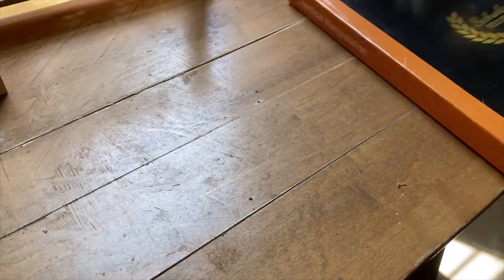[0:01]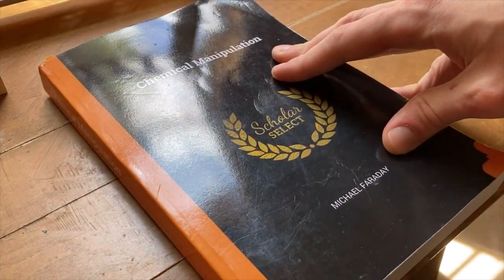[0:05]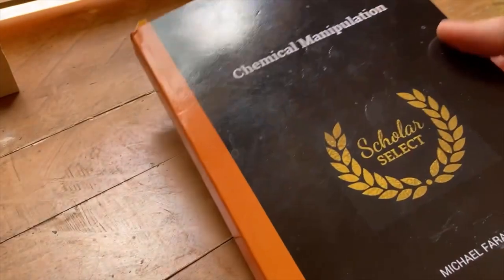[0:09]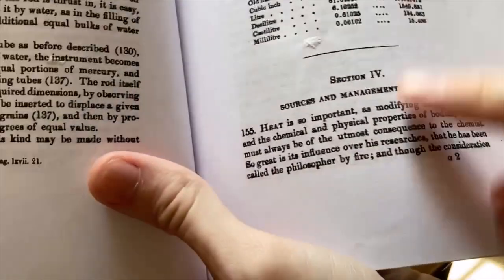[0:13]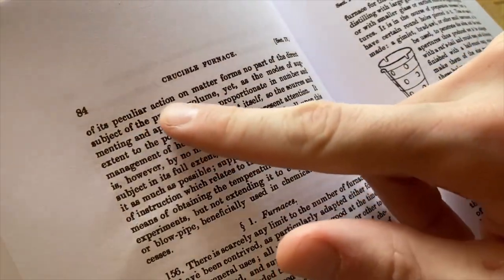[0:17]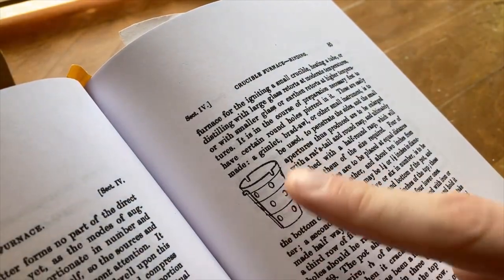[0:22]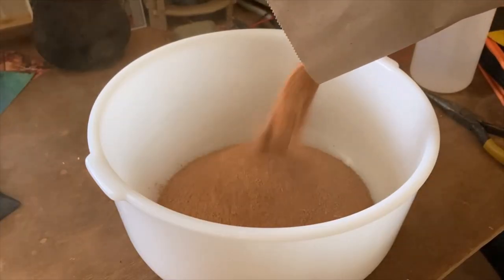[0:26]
This is Chemical Manipulation, a fantastic book written by the one and only Michael Faraday. The book details the lab techniques used by chemists like Faraday at the Royal Institute of London during the early 1800s. In section IV, under entry 157, Faraday describes something he calls a crucible furnace, which he claims to use for everything from simple distillations and heating flasks to melting iron as a desktop blast furnace.
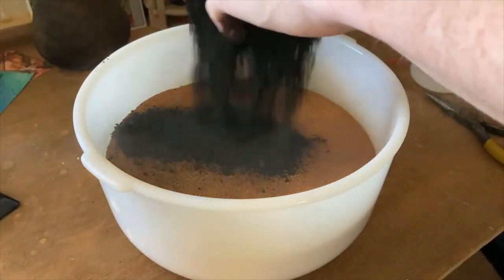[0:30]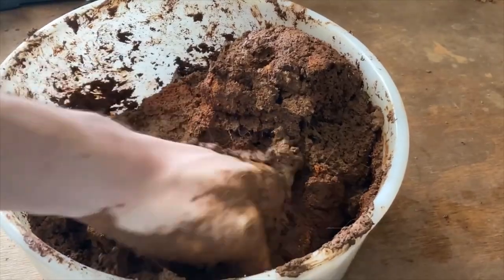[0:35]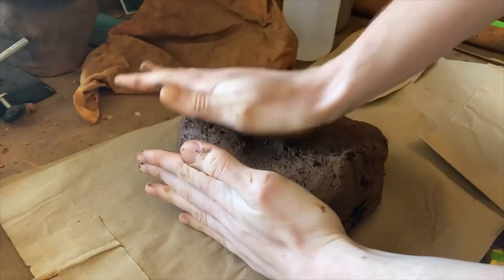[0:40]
I want to reproduce one of these furnaces and try to learn to use it. If it is even a fraction as versatile as Faraday suggests, I think I'll have quite a few uses for it, as well as it being potentially interesting insight into chemistry during the heart of the scientific revolution.
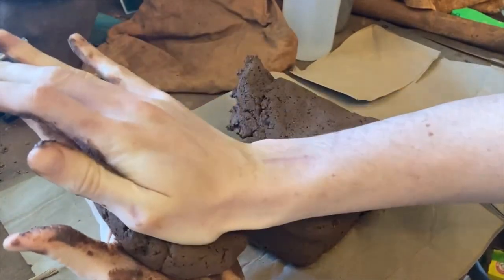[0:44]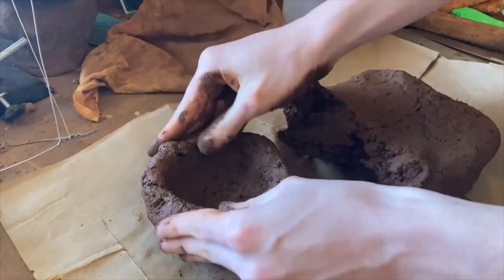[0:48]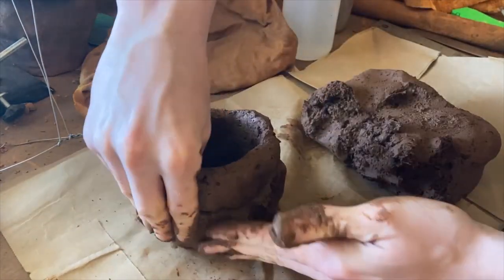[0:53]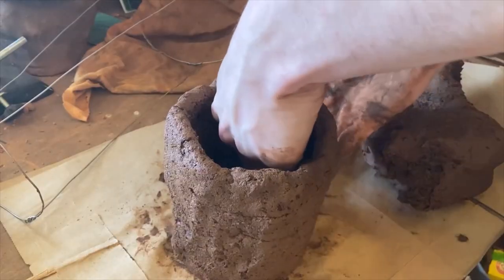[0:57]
Faraday says an aspiring chemist could purchase all the parts of his furnace from vendors, needing only minor modifications to be used as a furnace. But 200 years later, those vendors no longer exist, so I'm going to have to make it entirely from scratch. And because this is a ScrapCraft project, I'm only going to use natural and scrap materials to do so.
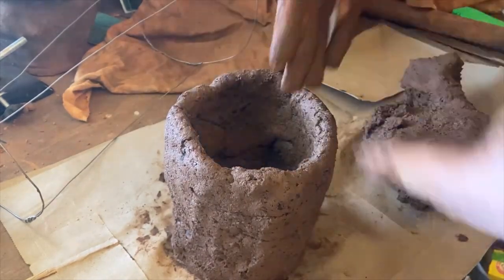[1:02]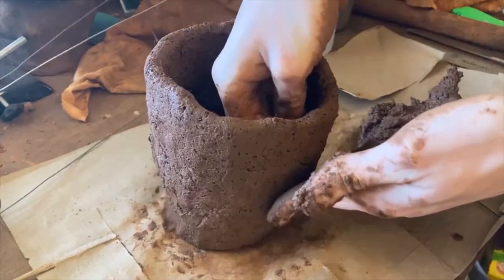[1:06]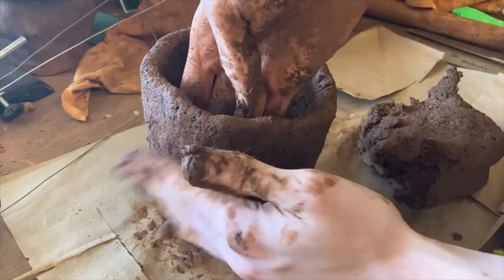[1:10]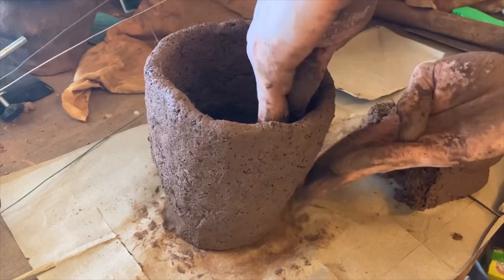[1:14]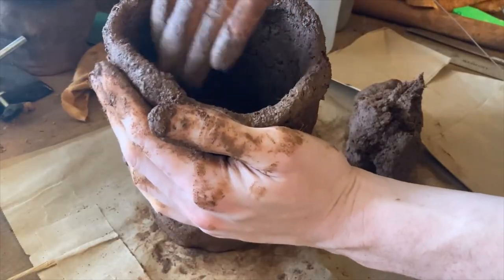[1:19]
In the book, Faraday writes that his crucible furnace is based on a clay pot made from plumbum-infused clay. To those who know Latin, you may think this plumbum refers to lead, but actually it's a reference to graphite. This means the clay will have a high elemental carbon content. I don't have loads of graphite on hand, so I'm going to use charcoal dust with the alchemist's clay recipe I showed in another video.
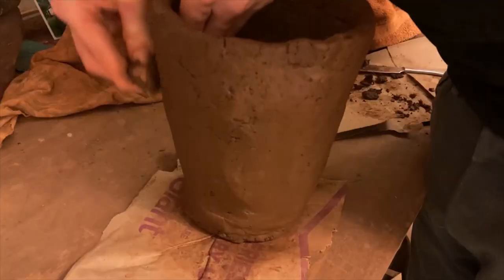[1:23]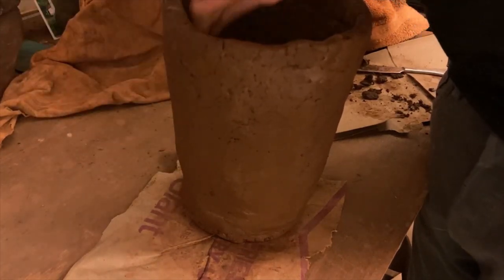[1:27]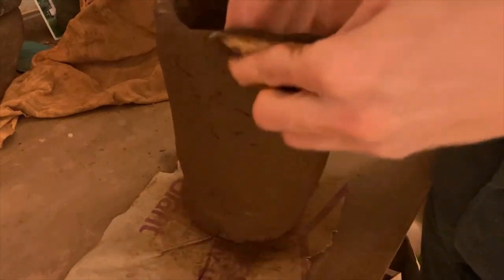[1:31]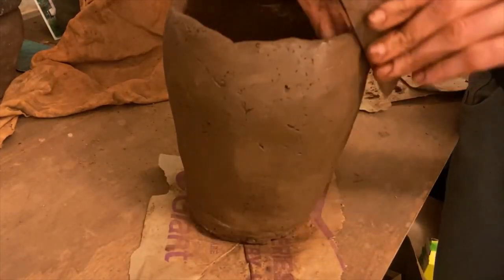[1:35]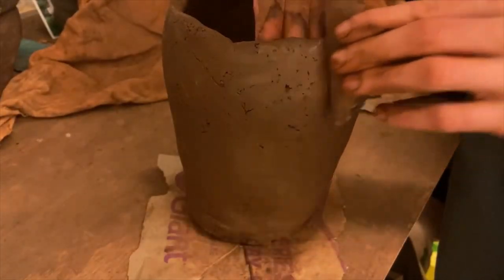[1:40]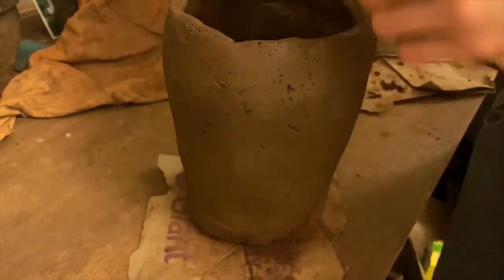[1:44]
Obviously, charcoal and graphite have very different properties, and I would not be surprised in the slightest if Faraday's furnace could withstand many more thermal cycles than mine will. But being that my clay recipe comes from the great Islamic Golden Age alchemist Al-Razi, and was used for his furnaces over 1,000 years ago, I'm certain it will at least work to some degree, and will make this project a little bit of a mashup of historical chemistry technology.
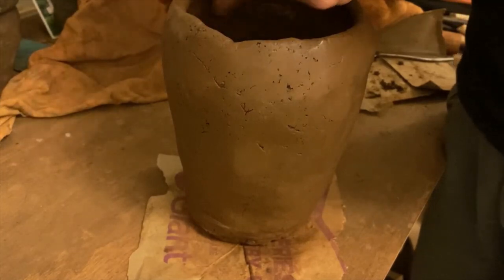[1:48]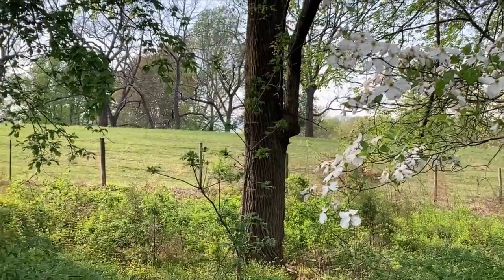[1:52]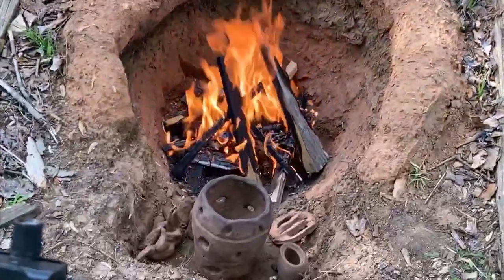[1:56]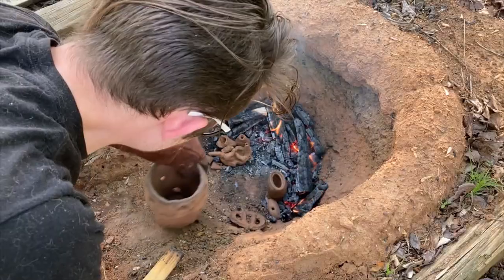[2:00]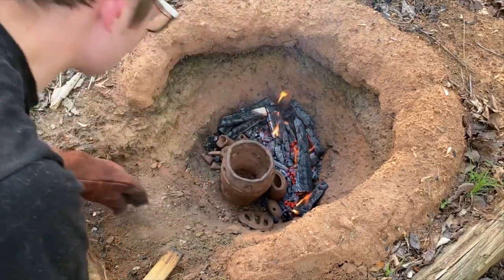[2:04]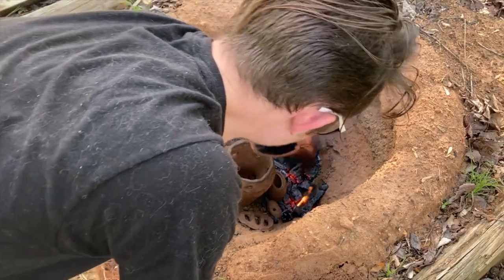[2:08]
After building up the pot, I drilled some holes and carved grooves to Faraday's exact specifications. Then I finally fired it. Faraday does not tell me if his pots were fired in oxidation or reduction, so I chose the simplest option: to fire in an open oxidizing pit, similar to my ancient forge project, making this furnace terracotta. So yet again, I'm dancing around the historical technology timeline, now back tens of thousands of years.
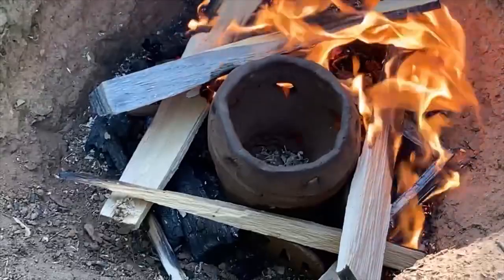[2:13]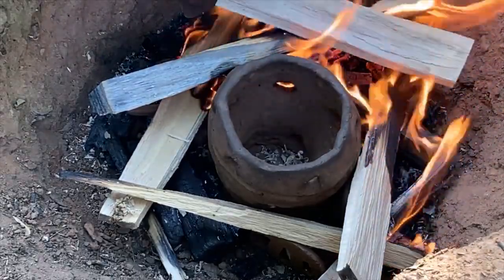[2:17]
While I fired the pot, I also fired some other things, including a small grill, which will sit just beneath the second row of holes in the furnace to hold the fuel off the ground.
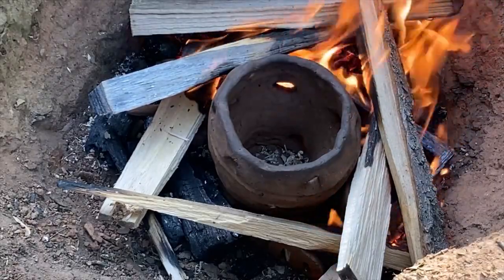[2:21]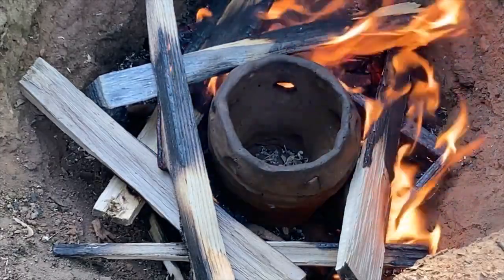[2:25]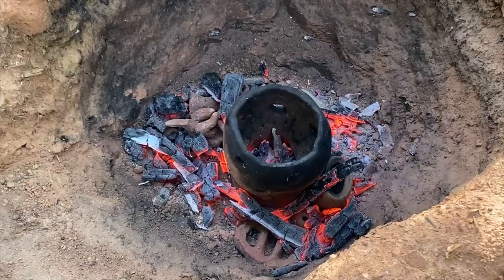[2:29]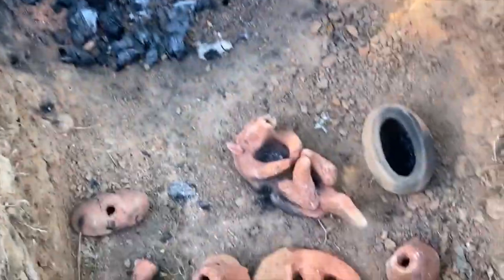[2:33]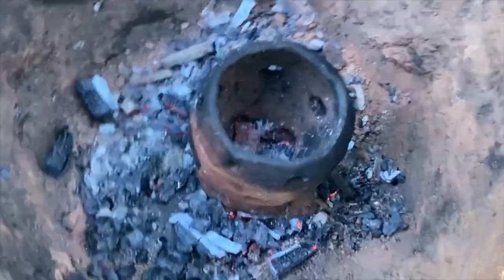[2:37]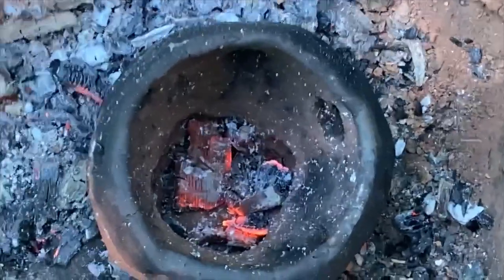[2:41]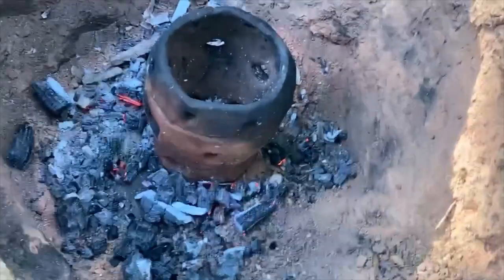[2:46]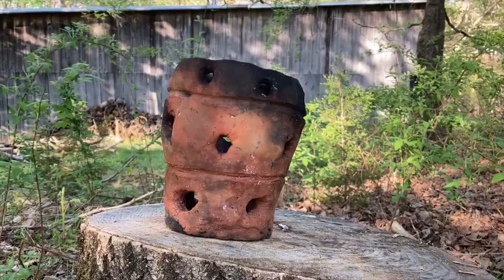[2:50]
So as you can see, the fire's out, and I'm pulling the things I've fired out of the fire. But what's interesting is the pot still has red coals in it. There's still actively glowing red in there. I think that's the aspiration of the furnace design already at work.
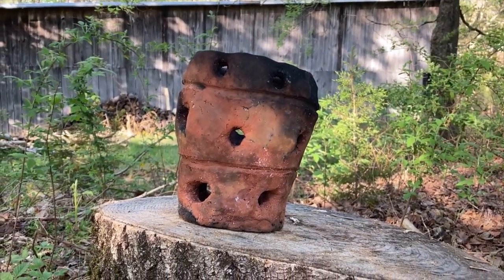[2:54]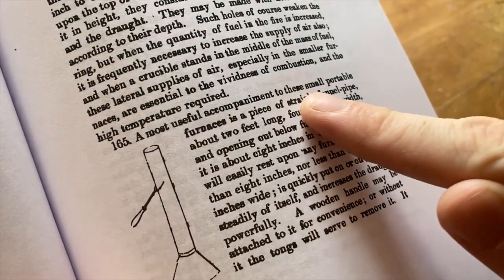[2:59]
While the pot is the main component of the furnace, Faraday insists on using a removable metal chimney, only about 2 feet long, and claims the combination of the furnace and smokestack will get iron white hot with very little effort from the user.
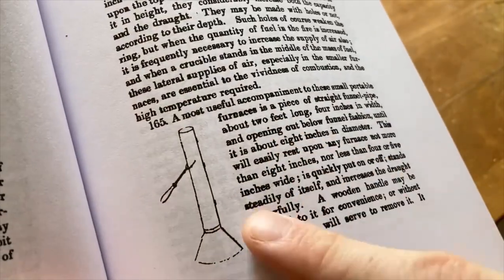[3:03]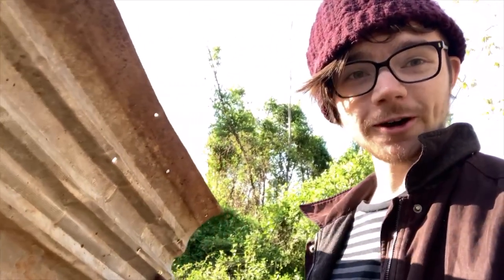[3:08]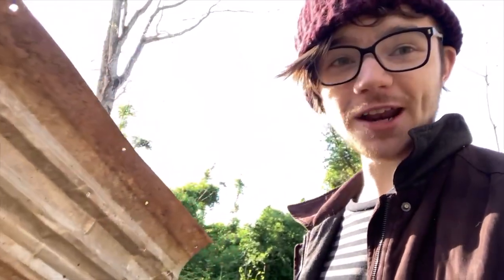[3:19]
This is old corrugated sheet metal. It's used for roofing, specifically things like chicken coops, doghouses, cattle feeders, that sort of thing. Whatever this thing was used to roof has long since rotted away, and I found this piece in the woods on top of a pile of rotten wood sort of deep in the dirt. So, I think it will work to make my chimney out of. It's riddled with holes, so it might take a little finessing, but I think it will work.
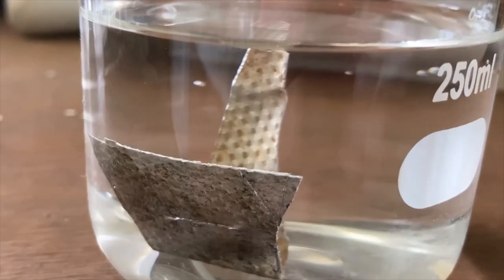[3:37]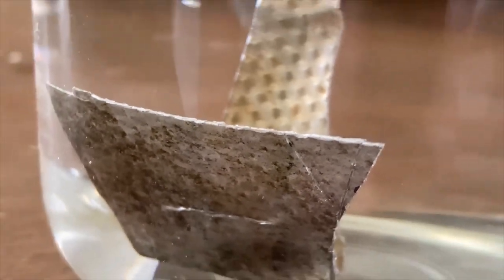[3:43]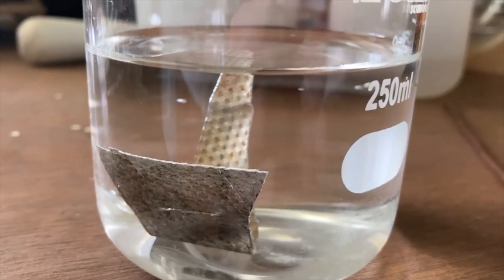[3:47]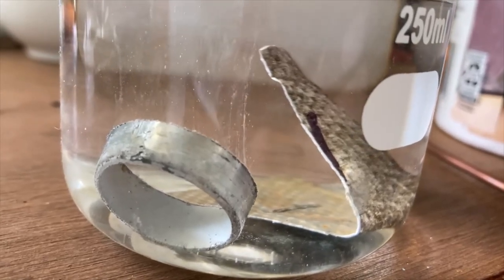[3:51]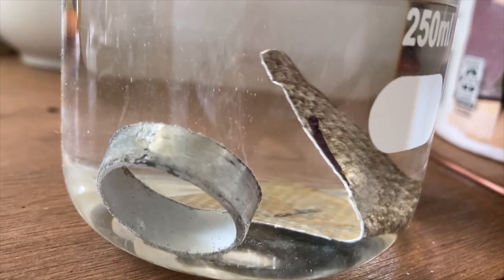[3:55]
First, I need to identify what type of metal my scrap is. To check for zinc or zinc galvanization, I submerged a piece of the metal in vinegar. Nothing happened. For comparison, I dropped in a galvanized steel pipe, and as you can see, it bubbles profusely as it generates hydrogen gas. As I was doing this, it occurred to me it was obvious what the metal was, and I'm sure at least a few of you have guessed by now.
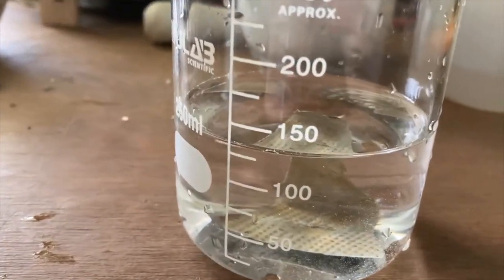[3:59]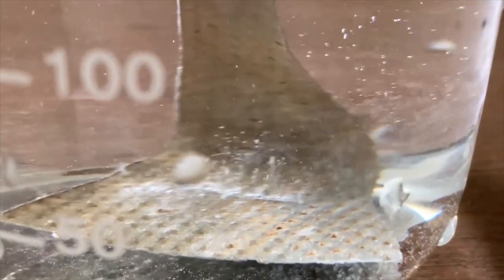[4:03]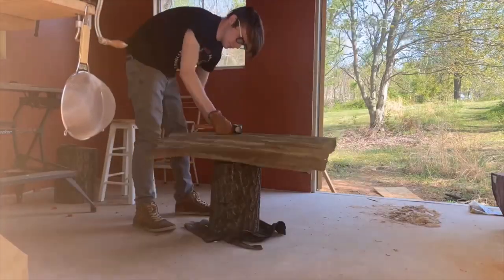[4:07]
So to confirm, I prepared another solution, this time of dilute sodium hydroxide, and dropped in the scrap. It immediately began to bubble, confirming that it is in fact aluminum metal.
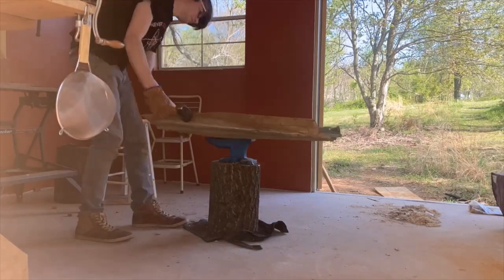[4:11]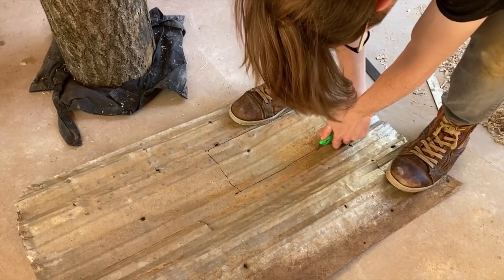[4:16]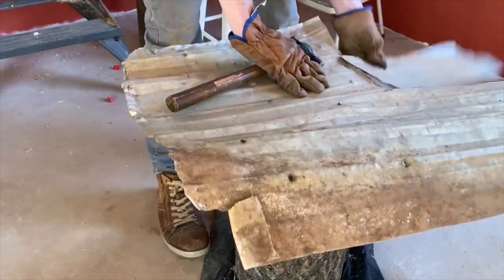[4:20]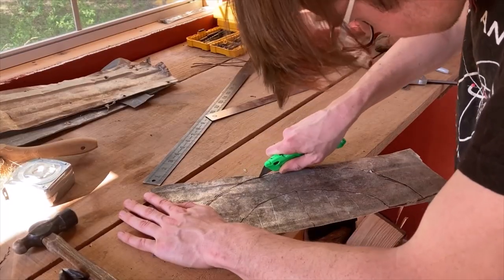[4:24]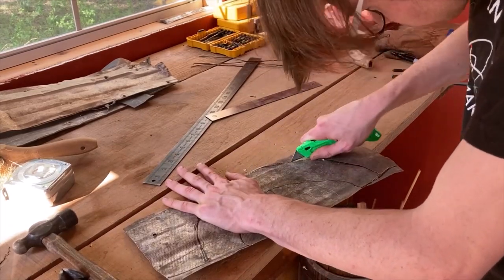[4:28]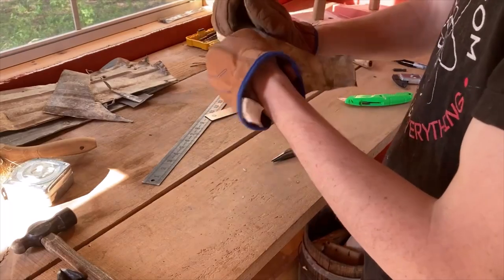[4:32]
Aluminum may not be perfect for this application due to its very low melting point, but I continued to work it anyways. It is very reflective in IR, which means it should resist being heated radiatively, and its high thermal conductivity should spread the heat that does reach it around evenly. Its melting point would be a problem if it weren't for my intention to only use the chimney intermittently, as running the furnace continuously with the chimney would be wildly inefficient.
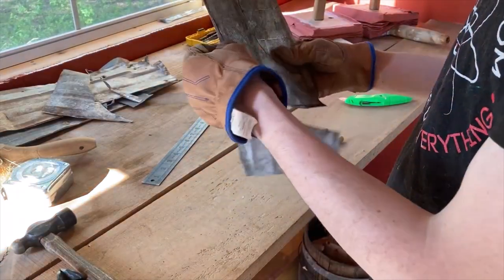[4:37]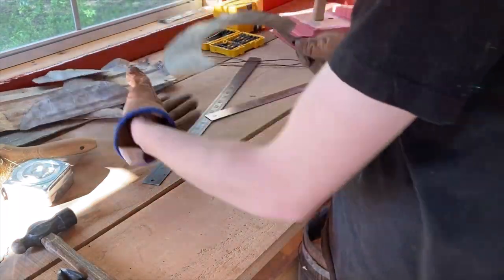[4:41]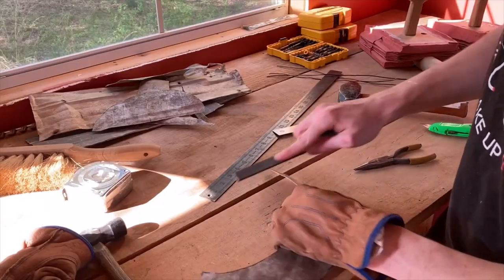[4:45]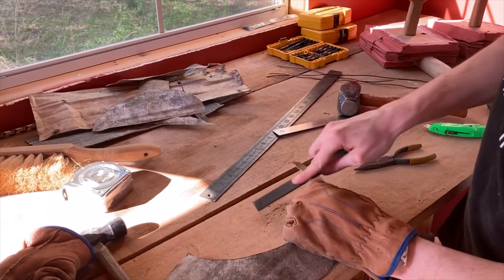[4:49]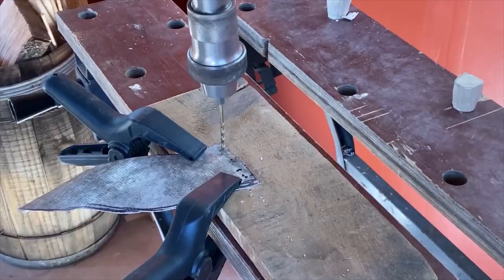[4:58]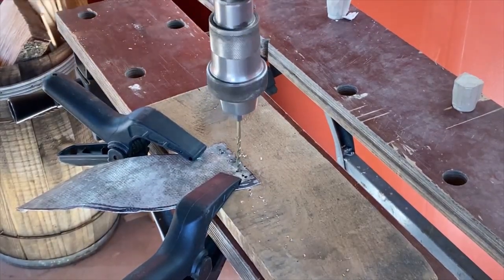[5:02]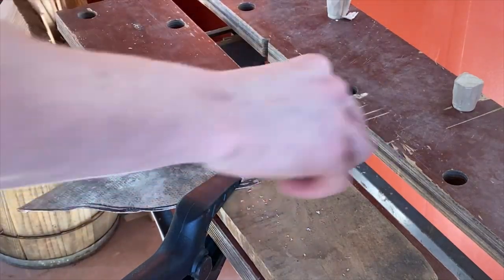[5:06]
A lot of people may think a chimney's role is just to give a place for the exhaust gases to go, but in reality, they have a large impact on how a fire burns. The chimney creates a column of hot air. As the hot air moves up the column, it creates a displacement, a little like raising the plunger in a doctor's syringe. This displacement sucks more air into the furnace, which invigorates the flame. The taller the chimney, the larger the displacement. This increased airflow increases the burn rate and raises the temperature of the fire higher than it would naturally be. In the case of charcoal, it can be a lot higher.
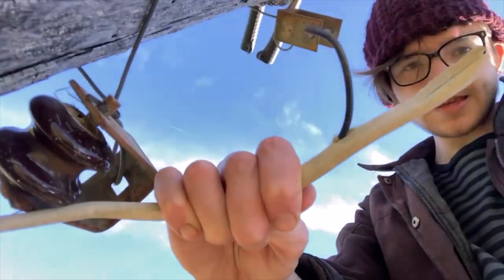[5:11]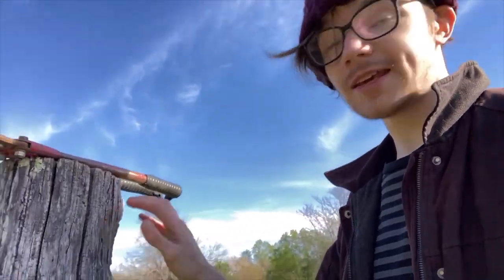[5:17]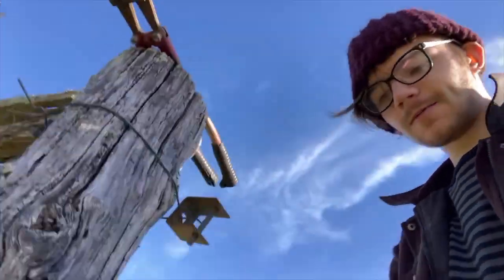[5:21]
This is an old fence, and this is electrical wire. It used to be an electric fence, which for the most part would be run through the fence itself. But here at the gate, it goes underground just for a few feet. And for those few feet, it's copper wire. So I'm going to use this copper to make my rivets for my chimney.
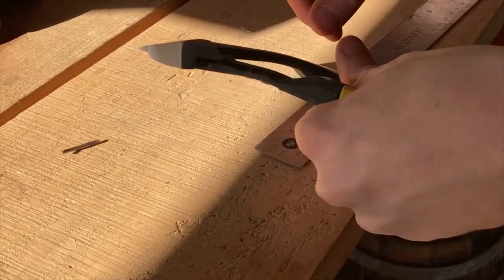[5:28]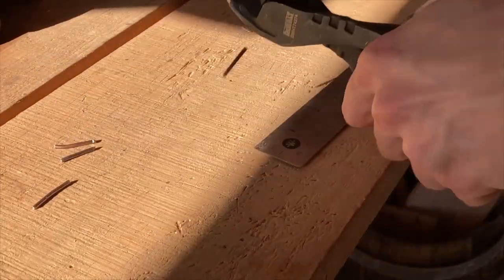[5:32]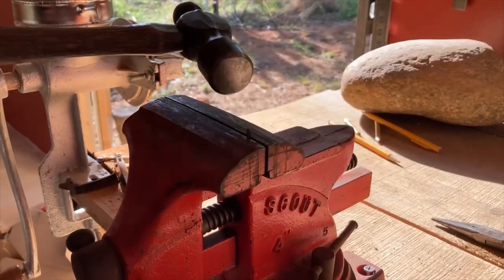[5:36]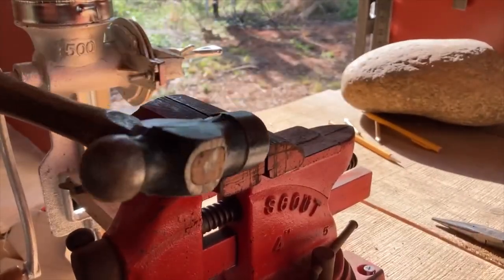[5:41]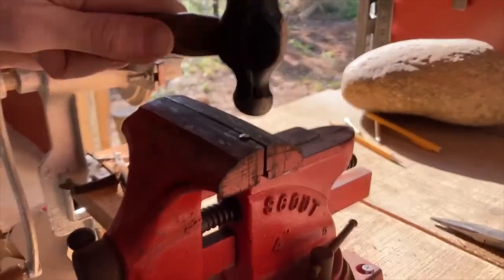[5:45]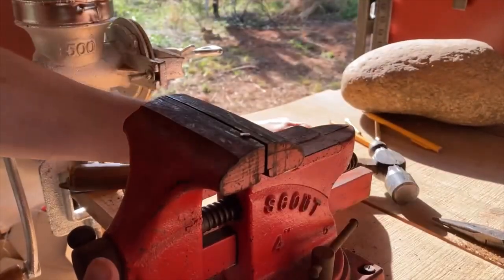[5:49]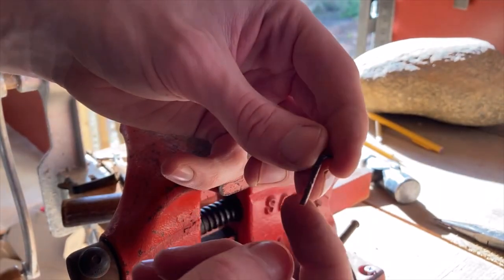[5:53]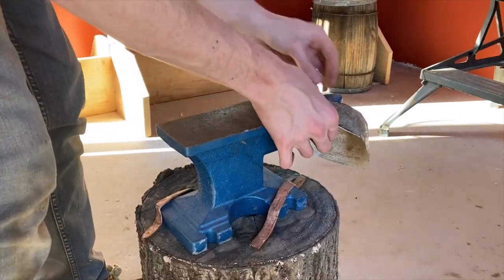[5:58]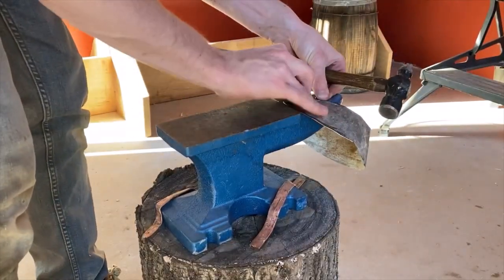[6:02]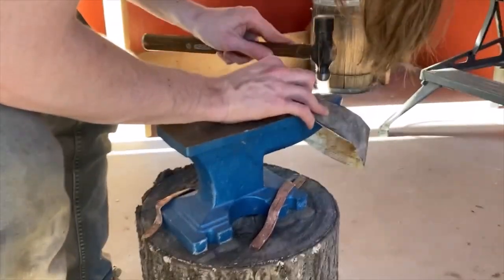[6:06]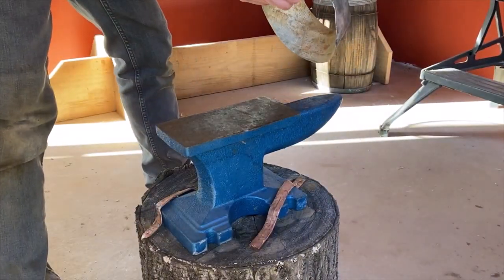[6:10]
The way a chimney increases the fire's temperature comes with a trade-off, as the same displacement that invigorates the flame and makes the furnace more effective has the consequence of carrying up to 70% of the heat energy generated into the air above the chimney, where it's effectively wasted. This is actually why, prior to the Industrial Revolution, houses commonly didn't have chimneys, as it was far more fuel efficient to cook your food on a chimneyless fire and just let the smoke percolate through your straw-thatched roof. The introduction of chimneys into cities that enabled denser living spaces ended up requiring people to use three times as much fuel to cook for the same amount of time as it did before the widespread use of the chimney.
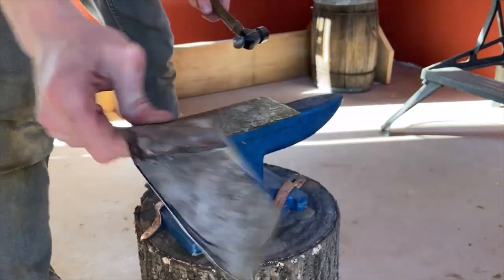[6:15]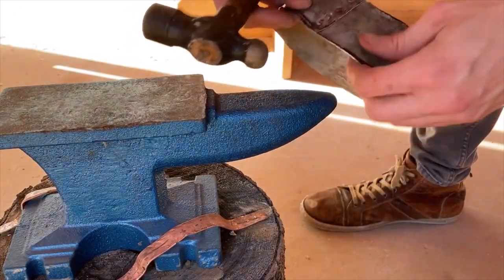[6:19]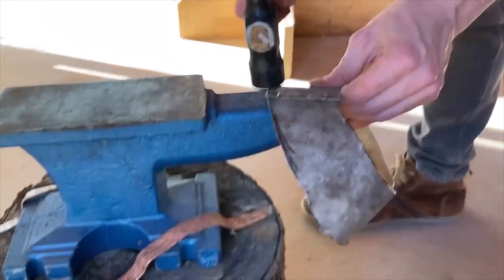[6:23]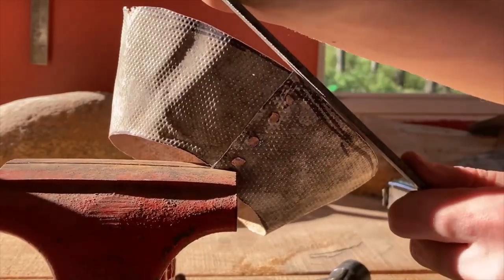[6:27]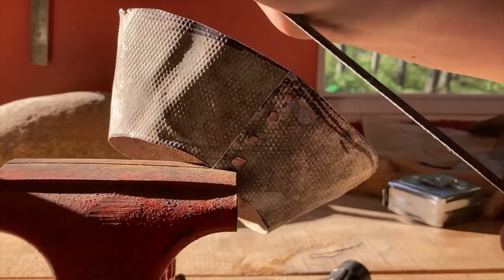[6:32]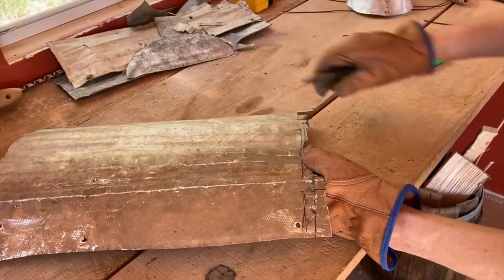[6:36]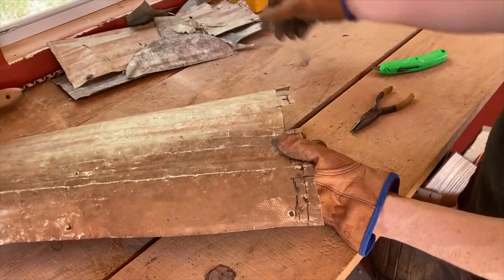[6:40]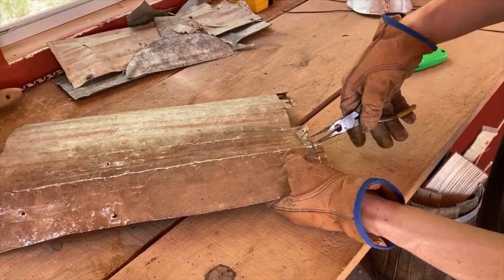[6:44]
The same problem existed in chemical furnaces as it did in kitchens. This furnace provides a nifty way around the problem by making the chimney removable. A low-temperature, efficient burn is as easily acquired as a high-temperature, inefficient burn. However, this means running the furnace is always going to be a balancing act of trading off energy quantity for temperature, and vice versa. Achieving the requisite temperature and energy quantity for a chemical reaction as quickly and efficiently as possible will take a lot of practice.
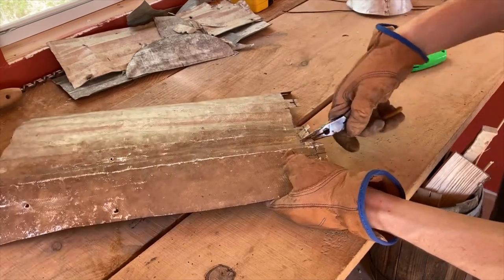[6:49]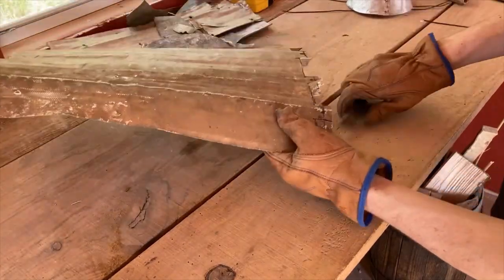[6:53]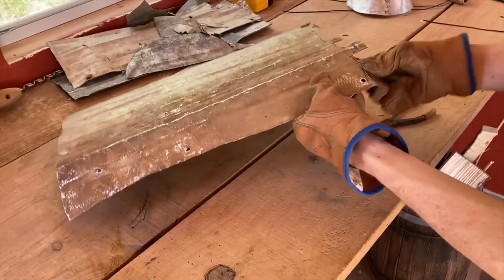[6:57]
I will likely use the chimney to start the furnace, but shift over to using a bellows or something similar for the majority of the firing. Faraday suggests doing exactly this, mentioning the fuel efficiency as his reasoning. This makes the fact that the chimney is removable very convenient.
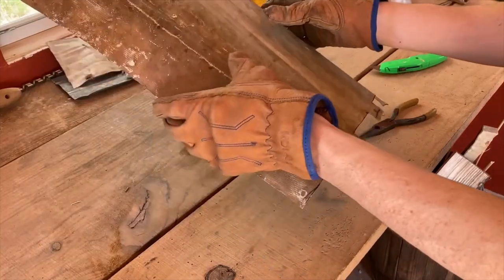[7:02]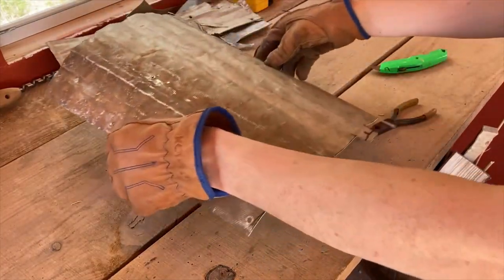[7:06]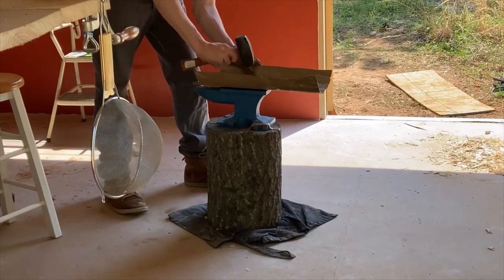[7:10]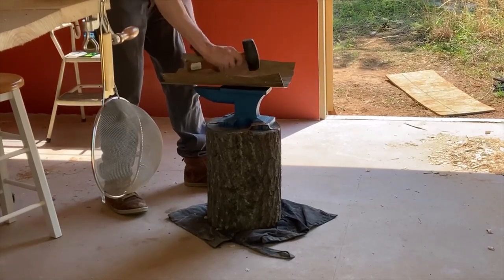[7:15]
The sheet metal design of this chimney is quintessential to Faraday's time. Only a few years earlier in the historical timeline, and sheet metal products would have been very, very expensive. But with the rise of industrial manufacturing, things like lightweight chimney pipes became widespread.
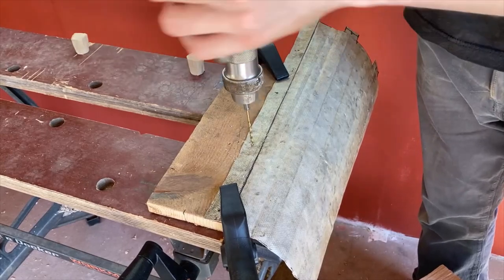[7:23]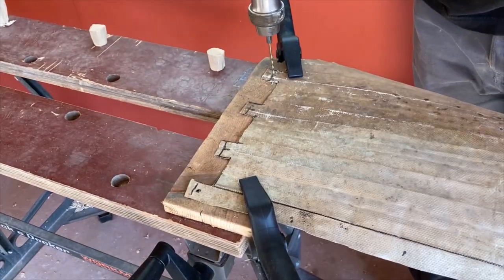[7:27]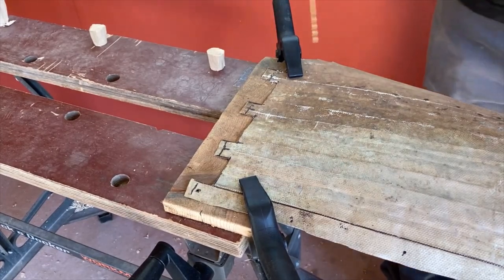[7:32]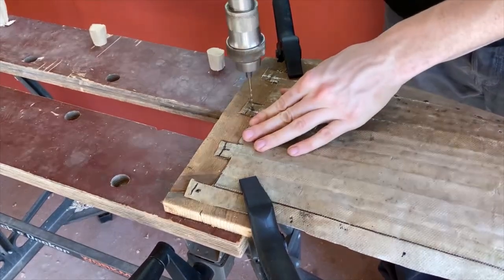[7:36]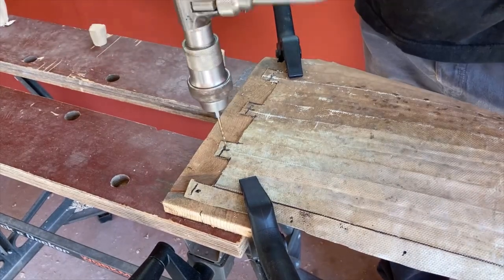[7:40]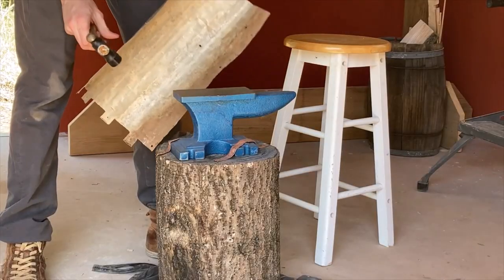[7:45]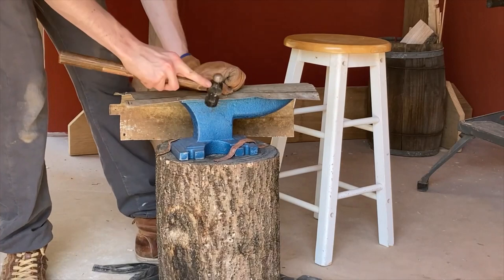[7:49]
I think the fact that half the furnace is pottery, an old art so attached to the traditional ways of life, whereas the other half is sheet metal, an icon of the industrial world, will make this furnace seem strange on an aesthetic level. It's the meeting point between two disparate worlds, and it's especially strange to see the pieces of it out of place and in our own world, where the sheet metal that once would have been prohibitively expensive to even look at is now littering forests as abandoned remains of the incredible growth that came before.
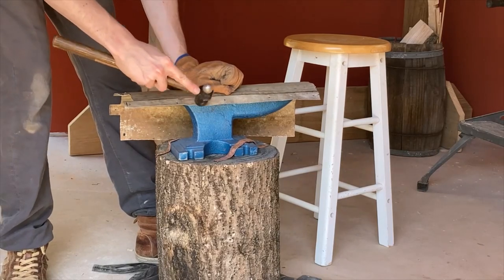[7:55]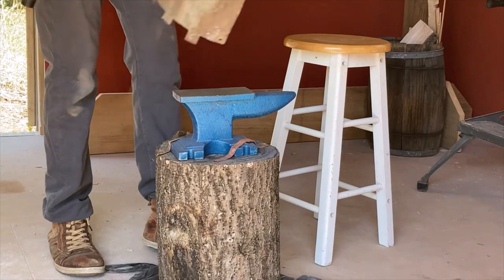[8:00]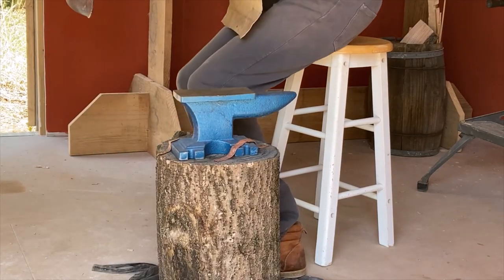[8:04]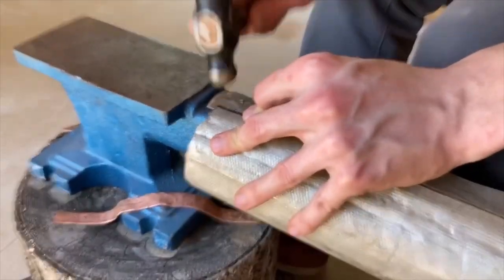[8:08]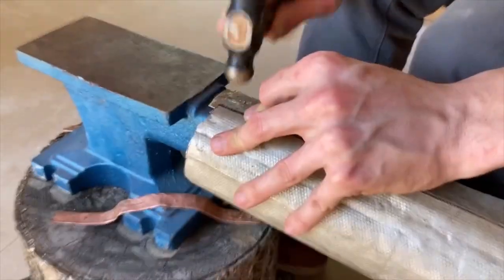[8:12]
My favorite part of historical design is almost always the beautiful and elegant simplicity of the solutions they provide. However, this simplicity is almost always matched by a demand for skill on the part of the user. I have no idea if my first attempts at reactions in this furnace will be successful at all. I've never used a furnace like this, and I'm still very much a novice to the art of manipulating fire in general.
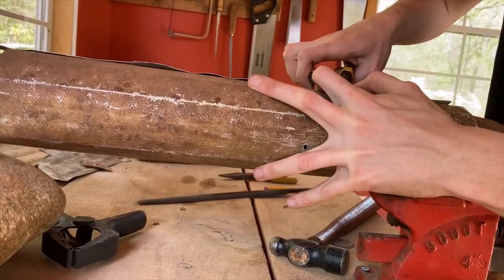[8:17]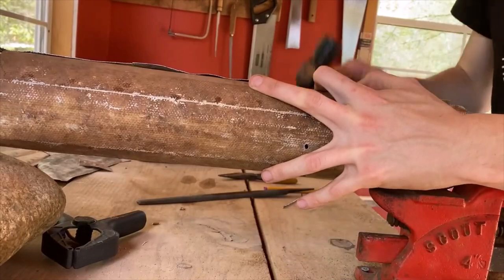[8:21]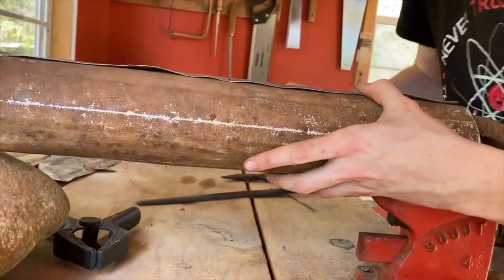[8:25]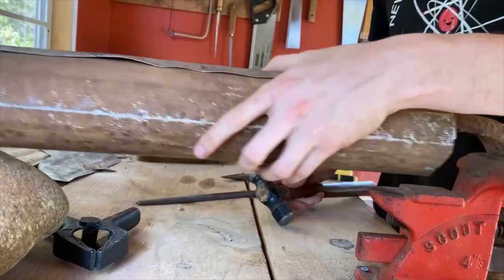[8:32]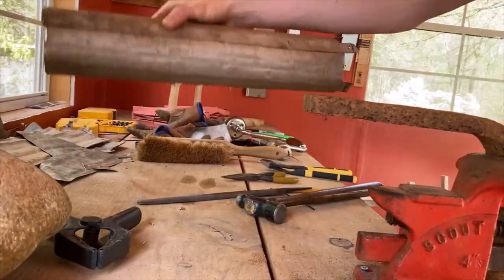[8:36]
In Faraday's time, chemists would have been very adept at the use of fire, and were even called the philosophers by fire. In old chemical and even alchemical texts, the word fire is almost used as a placeholder for the word truth. If something is proven true, it is said to have been confirmed in fire. If a hypothesis is proven wrong, it has been rejected by the fire.
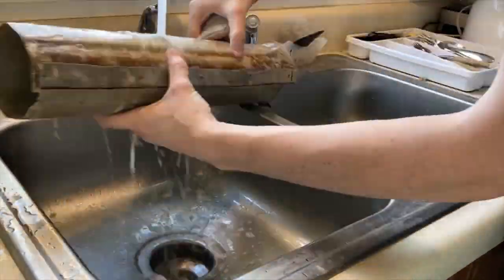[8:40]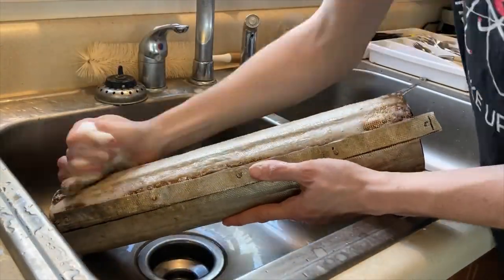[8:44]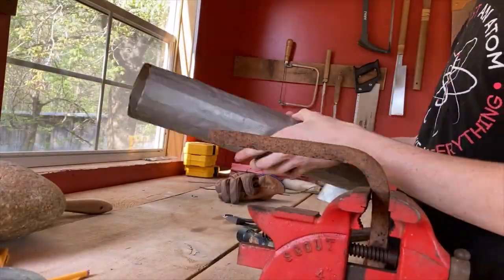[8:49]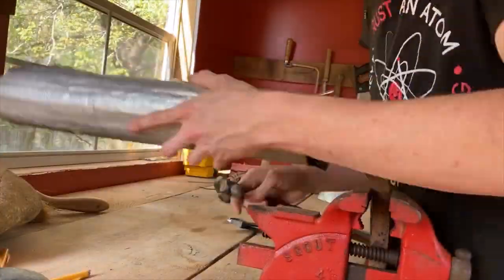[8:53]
Centuries before Faraday's time, these words would be scrawled in Latin along the margins of notebooks, alongside the hypothetical formulas they pertain to. These days, it's rare to even just see the use of a Bunsen burner in a lab, largely due to the many contributions Faraday himself made in the field of electricity.
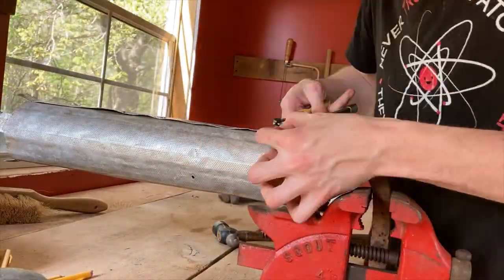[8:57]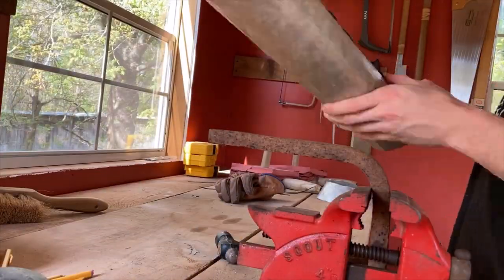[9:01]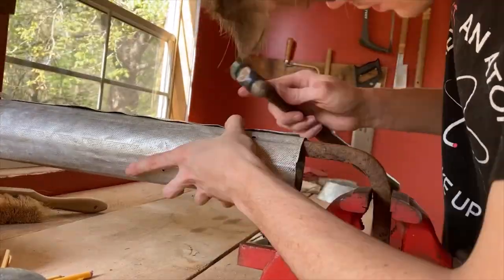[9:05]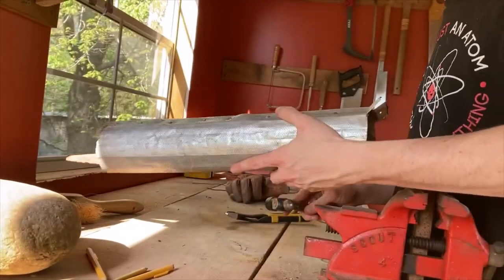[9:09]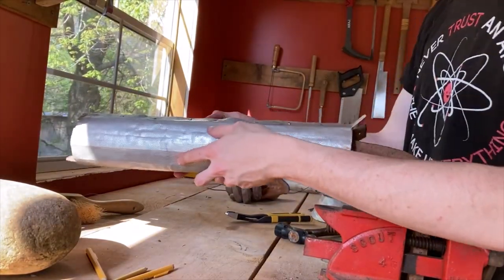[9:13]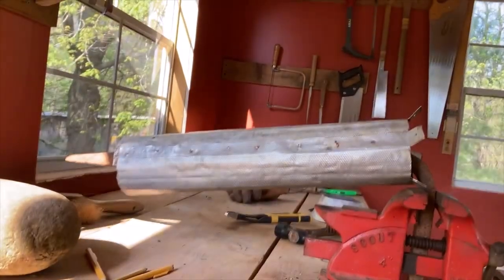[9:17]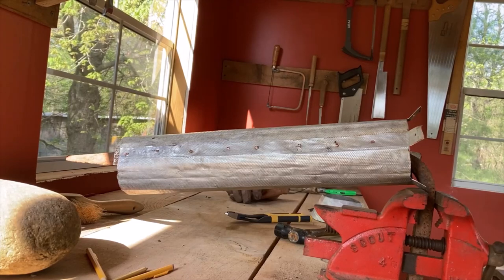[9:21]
There you go. So it's really, it's not beautiful. That is not my best riveting work. Well, okay, technically it is, because I haven't riveted anything before this. But I'm pretty sure I can do better, but it was an interesting learning experience.
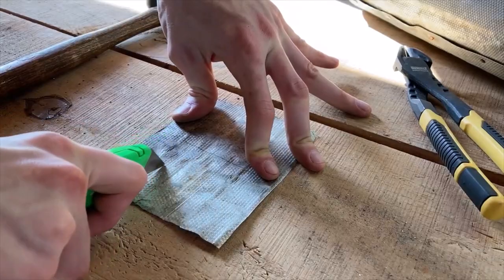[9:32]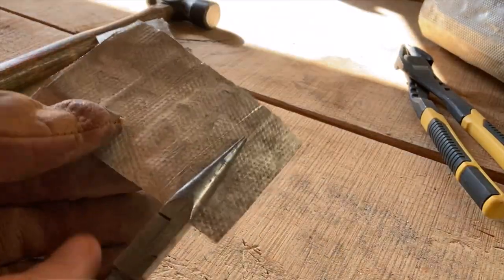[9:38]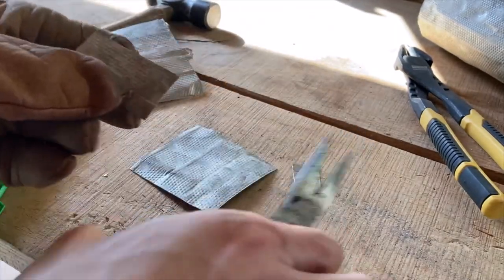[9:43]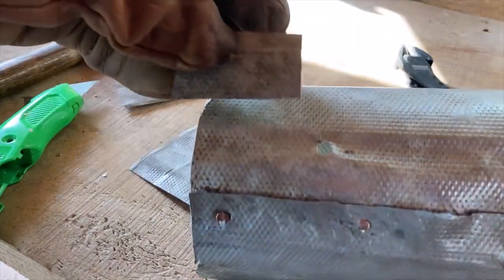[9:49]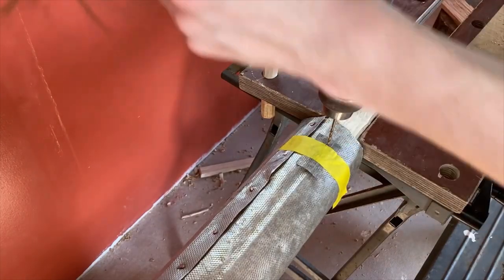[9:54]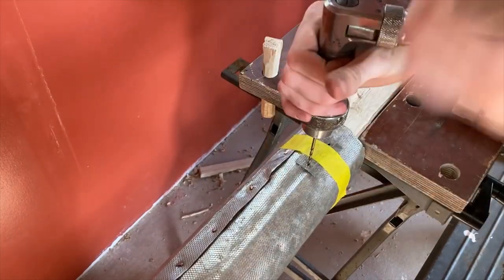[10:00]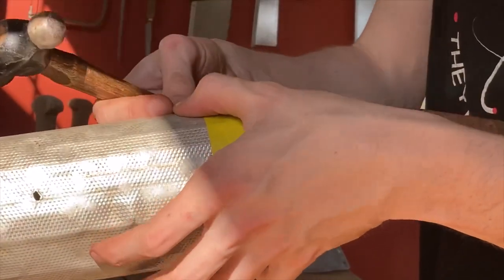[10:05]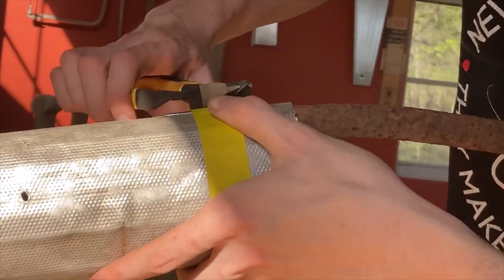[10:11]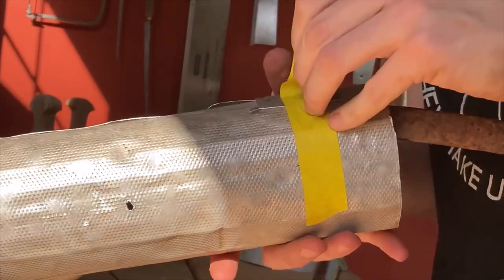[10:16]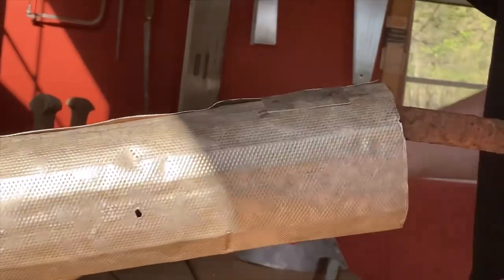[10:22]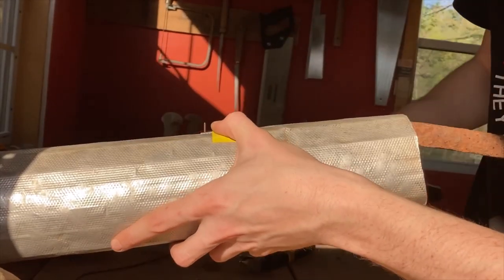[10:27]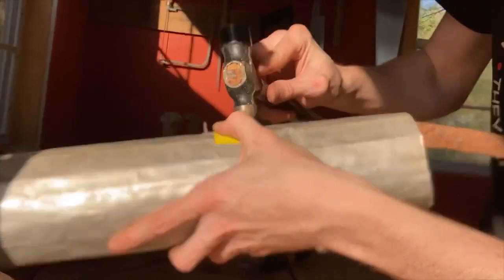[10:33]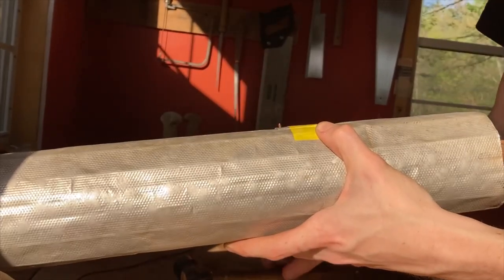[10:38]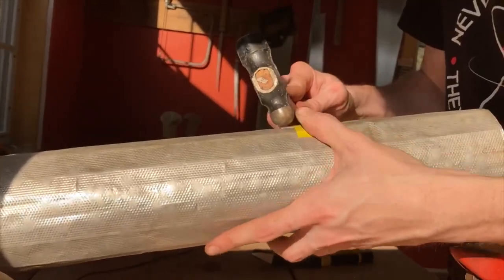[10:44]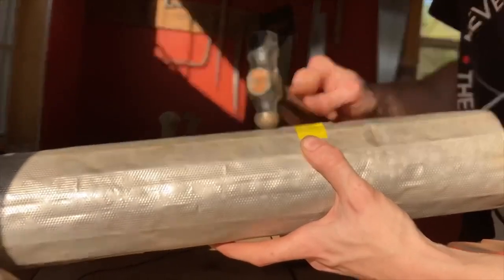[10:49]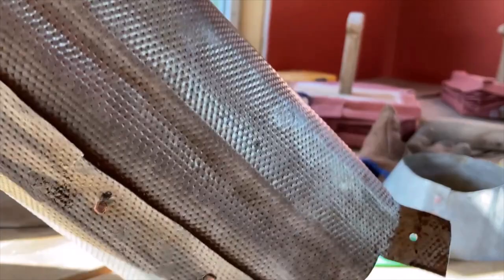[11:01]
Got the holes patched, and as the chimney pipe is finished, I just need to attach the funnel to the bottom end. Might be kind of tricky. I don't know.
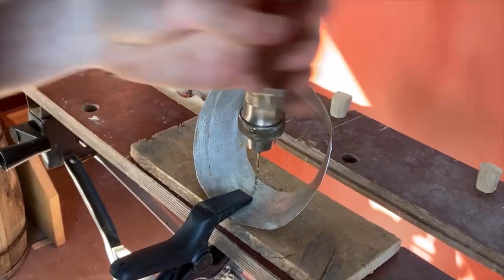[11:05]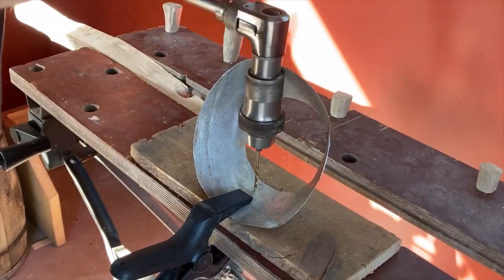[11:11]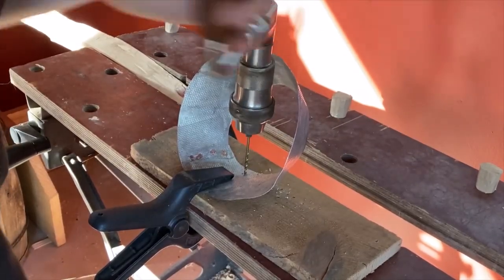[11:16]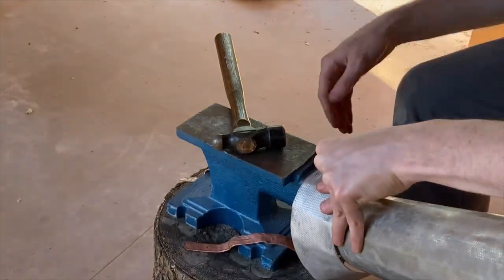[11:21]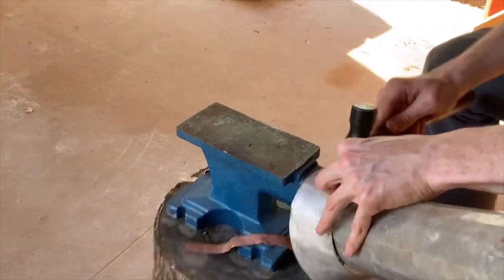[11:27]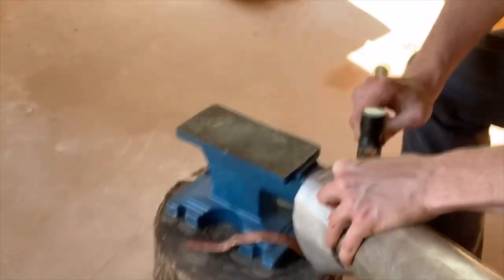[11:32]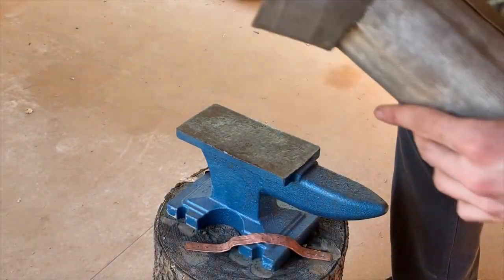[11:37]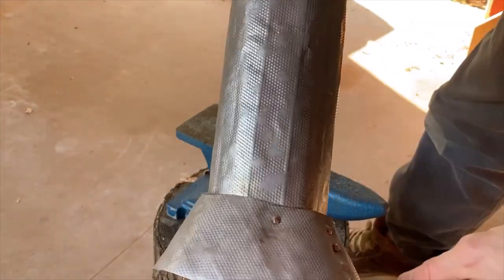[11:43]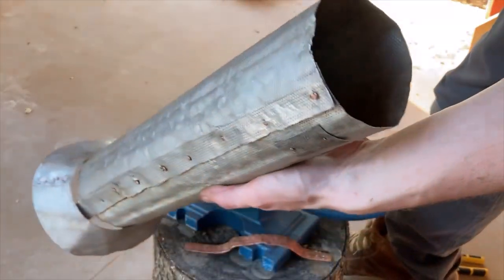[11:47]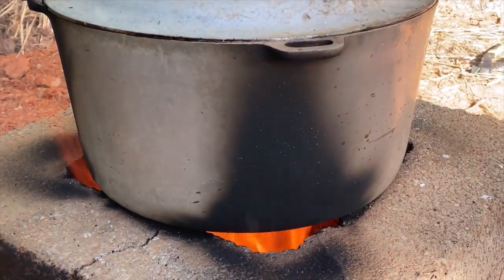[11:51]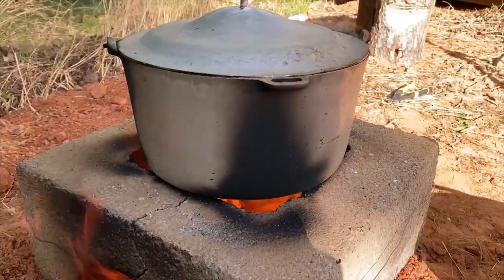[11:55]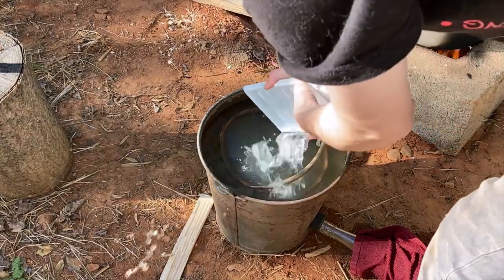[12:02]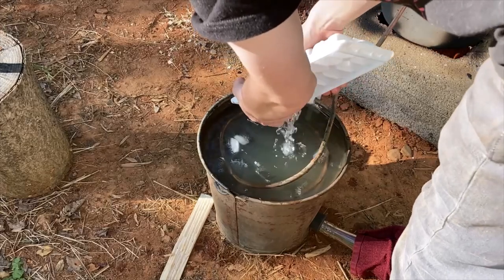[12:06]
Now that we've completed the chimney, it's time to make the fuel. Faraday specifies to use charcoal with the furnace. Just as with my ancient forge, I'm making this by heating cellulose, this time from fallen cherry branches, in a strongly reducing atmosphere. I decided to attempt distilling the pyrolysis vapors of this batch, as Faraday mentions pyroligneous spirit later in Chemical Manipulation, and I was curious to see if I could source some of my own.
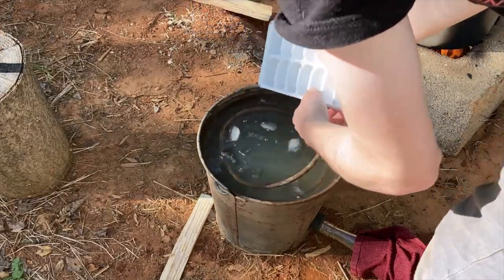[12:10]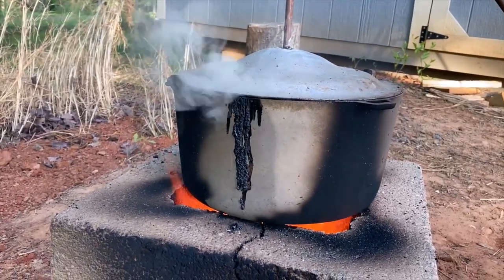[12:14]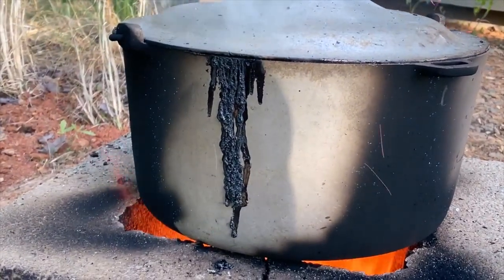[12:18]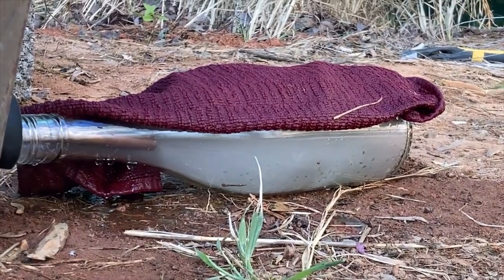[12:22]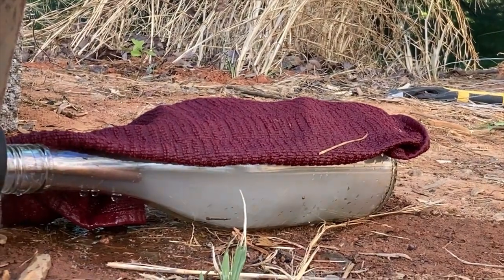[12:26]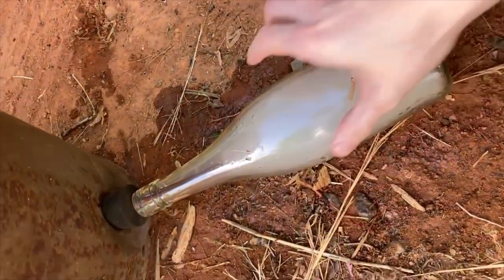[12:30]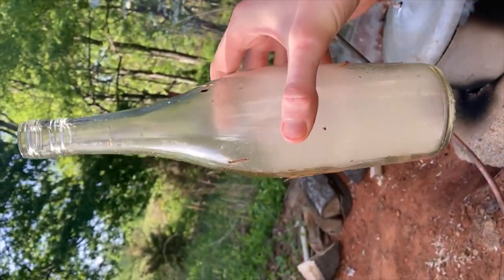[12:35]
I was careful not to seal the lid of the charcoal vessel, as if the condenser pipe clogged, it could easily lead to an explosion of very flammable gases. But luckily for me, for a few wonderful minutes, I was able to capture a bottle of cool vapor before a clog occurred. I found that after the vapor condensed, the fluid was largely water, but also very acidic and smelled strongly of barbecue potato chips. I'll probably have a video about this pyroligneous fluid sometime in the future.
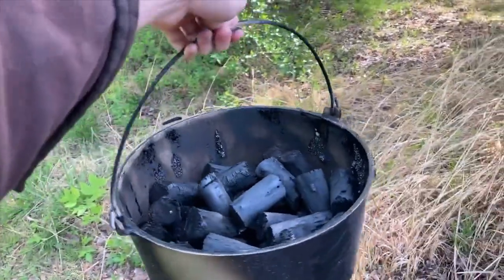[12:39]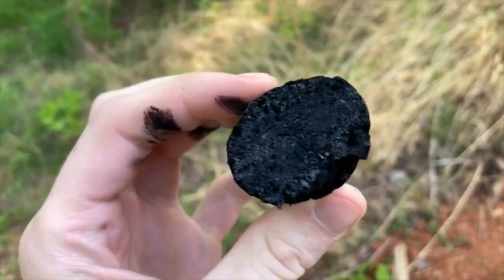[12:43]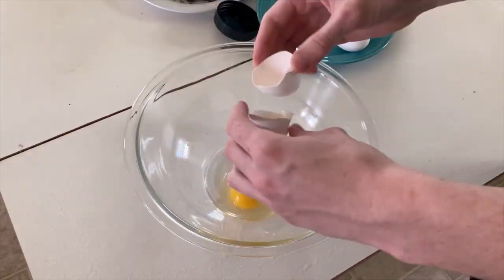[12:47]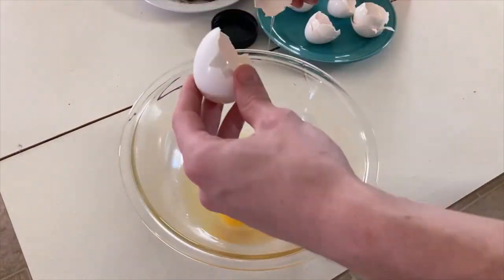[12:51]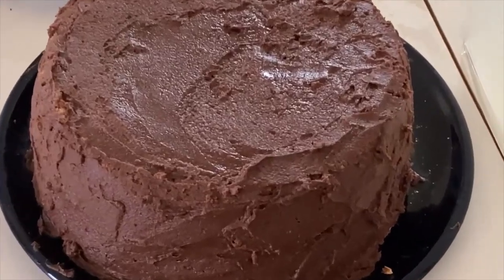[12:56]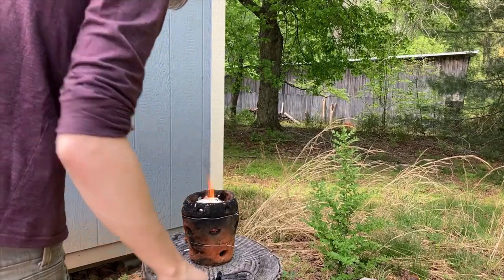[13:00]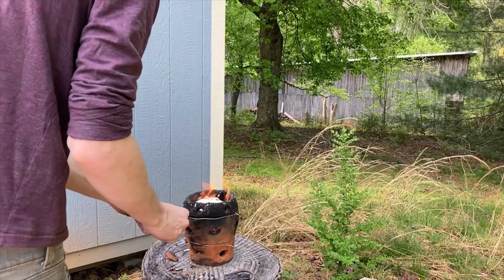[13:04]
With the batch complete, I can finally start up the furnace. However, without anything to heat in the furnace, it would be a waste of time and energy. To test the furnace, I made myself a quick sponge cake and had brunch with the family. Sponge cakes use an obscene amount of eggs, and eggshells are primarily calcium carbonate, so I saved off the eggshells in order to calcine them, or thermally decompose the calcium carbonate into the much more dangerous and exciting calcium oxide.
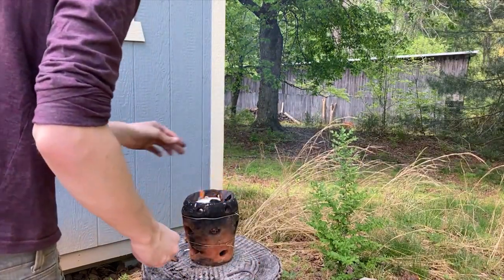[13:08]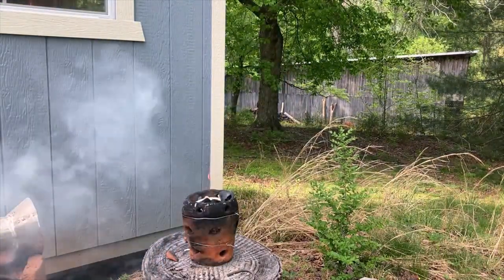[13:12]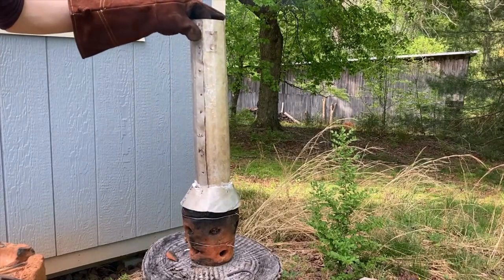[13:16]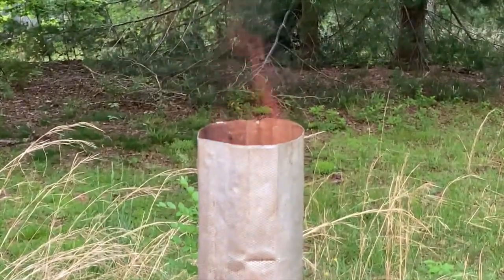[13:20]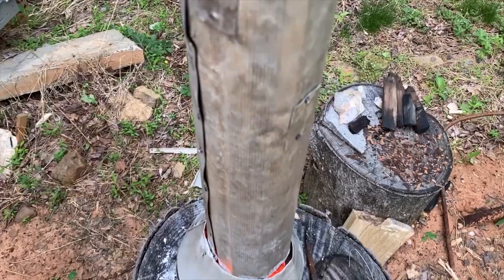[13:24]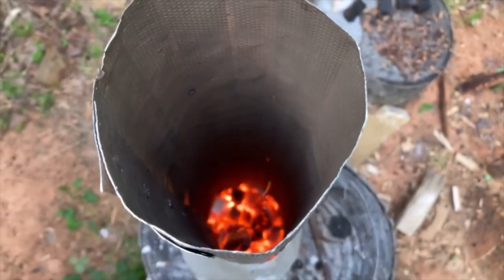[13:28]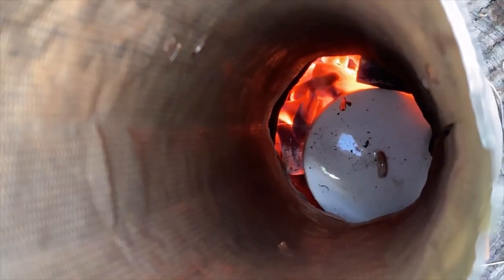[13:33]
Faraday specifies to light the furnace with a little brown paper, so I threw in a crumpled sheet and a few broken wood splints along with smaller chunks of charcoal. The strong draft from the chimney makes the act of lighting the furnace easy and fast, and for a brief period summons a column of flame through the length of the chimney. Once the paper and wood burns away and the coals are lit, the furnace rapidly increases in temperature to a blistering white heat until the chimney is removed.
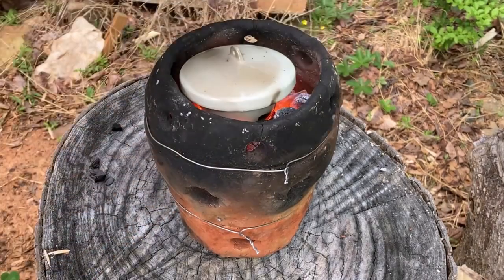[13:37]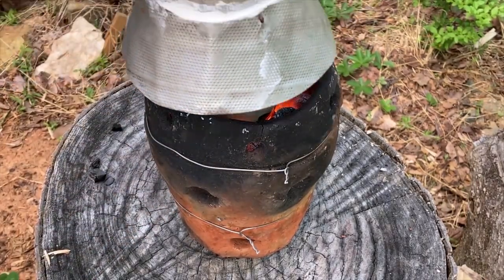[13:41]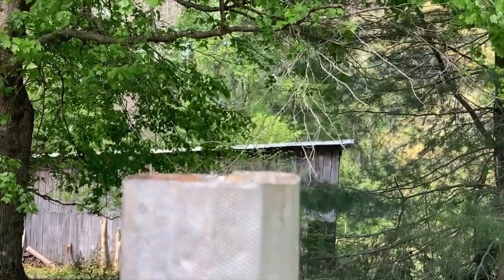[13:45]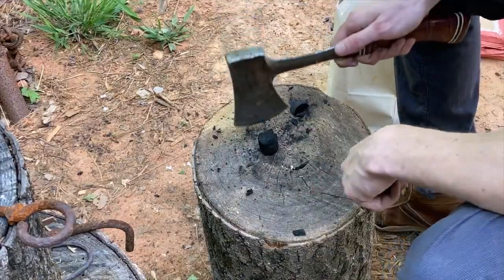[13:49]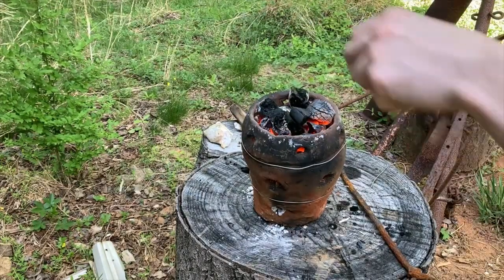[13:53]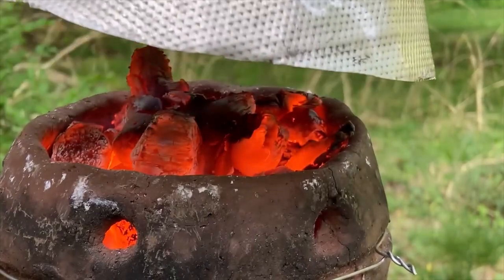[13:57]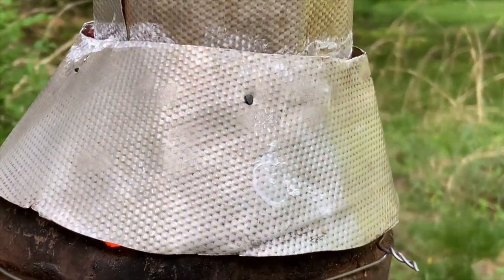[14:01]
After my first run, I had made only a tiny fraction of progress in converting the calcium. It was clear my method could use some work. But by the third attempt, after switching to a steel crucible instead of ceramic, and working out a sort of ballet of moving between the chimney, to the fuel, to stirring the contents of the crucible, to the bellows, and then back again, I was able to achieve closer results to what I was hoping. Not a full conversion, not even close, but I managed to make a small amount of pure white oxide mixed in with burnt, unconverted eggshell.
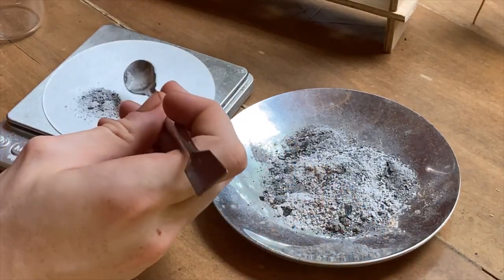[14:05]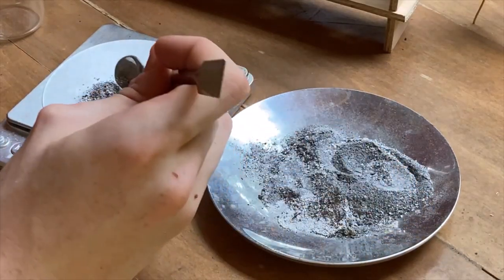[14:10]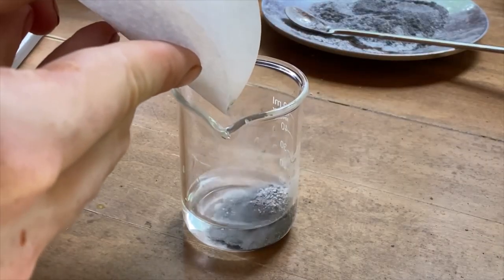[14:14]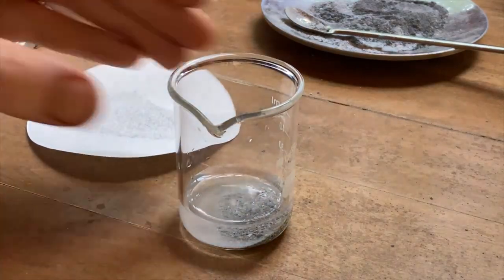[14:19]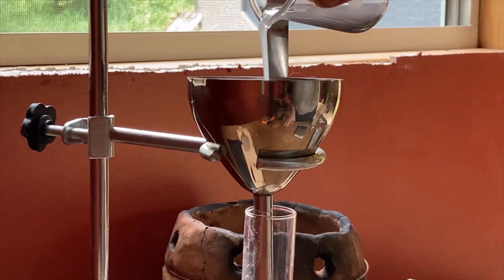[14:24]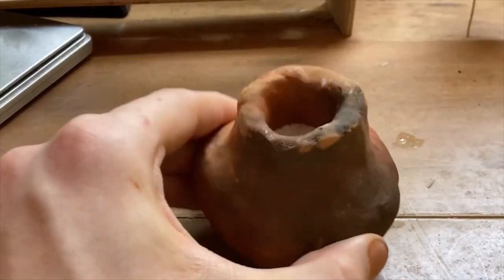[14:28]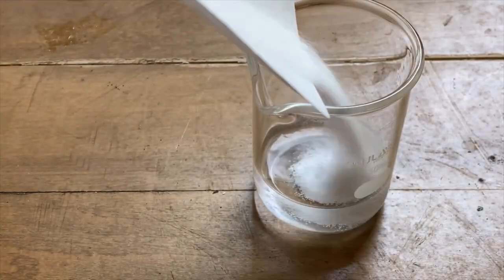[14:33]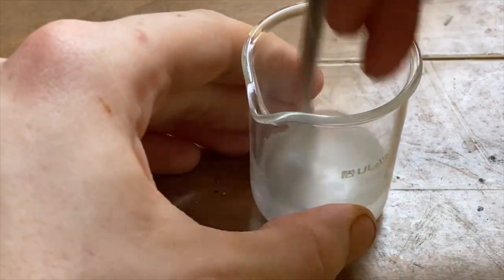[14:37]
To prove this is in fact calcium oxide I've made, I'm going to use it to try to create the ever-useful sodium hydroxide lye in a double displacement reaction. By mixing the powder I created with water, the oxide tears apart water molecules to form calcium hydroxide. I then filter this calcium hydroxide solution through a thin piece of cotton as a coarse filter to remove most of the eggshell left behind. Then I dissolved a small amount of sodium carbonate into water and stirred it for a minute or so till the solution was clear.
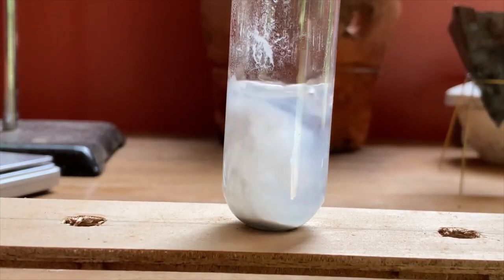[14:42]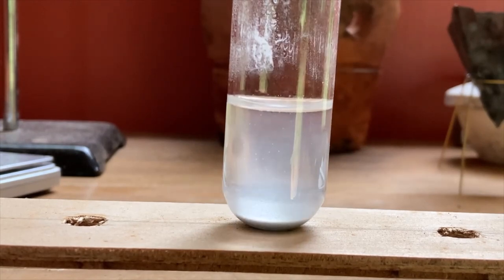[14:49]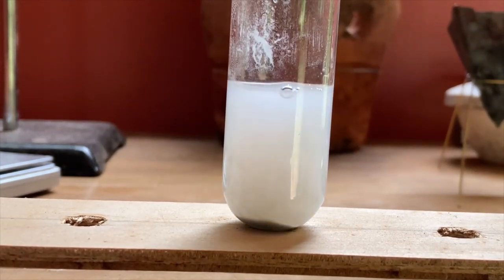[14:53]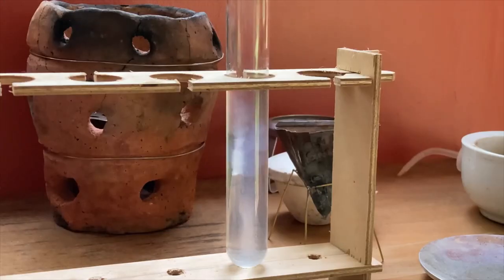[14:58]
Adding a few drops of the solution to the test tube containing the calcium hydroxide solution creates a puff of white in the vial. The white is calcium carbonate precipitating, leaving sodium hydroxide behind in solution. I felt the sediment in the tube made this reaction a little unclear, so I filled another tube with better filtered calcium hydroxide made from the rest of my yield. Here you can really see the cloud forming as soon as the two liquids touch. Double displacements are always my favorite type of reaction, because of how showy they are. Though I still have a lot to learn with this furnace, I'm going to end this video here.